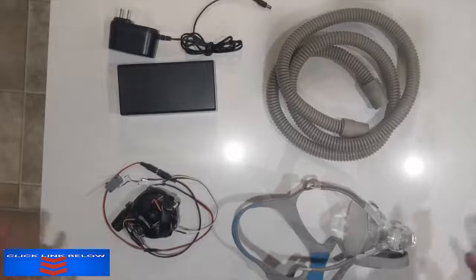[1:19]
Hi, my name is Johnny Lee, and among the many concerns around coronavirus, one of the growing concerns is around the shortage of available ventilators that might be needed in the case of an acute respiratory attack or distress. Now, there's a lot of efforts around the world trying to accelerate the production of FDA-approved ventilators, and those are definitely the best path, if possible, if those can be ramped up in production.
There's also a growing interest around what might be possible with really low-cost designs that aren't nearly as good as a professional ventilator, but might be usable or even helpful in an emergency. To help accelerate this effort, I wanted to share a design that I've been working on that might be simple and easy to build in the case that official ventilators aren't available.
I'm interested in getting feedback from medical professionals or engineers on how this might be more useful medically or easier to build. Now, I'll start off to say I'm not a medical professional, and this is not a medically certified device. So if you have professional care available to you, you should definitely seek that out over anything you might see in a YouTube video.
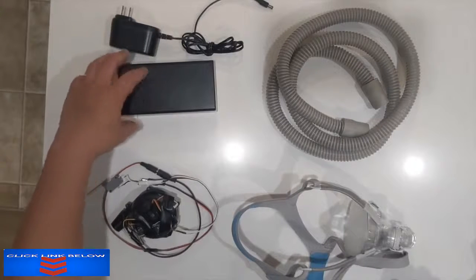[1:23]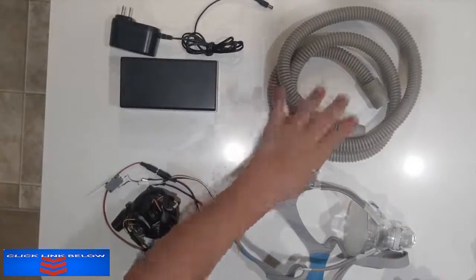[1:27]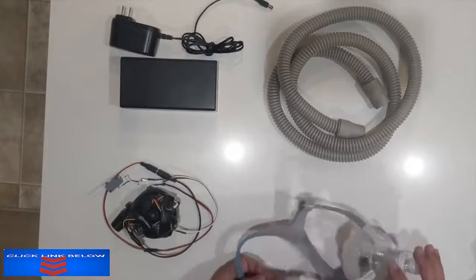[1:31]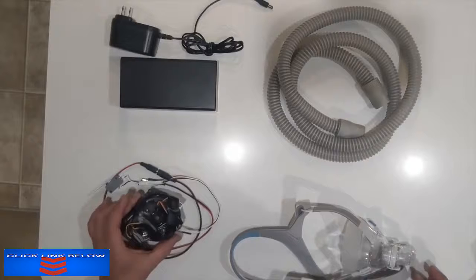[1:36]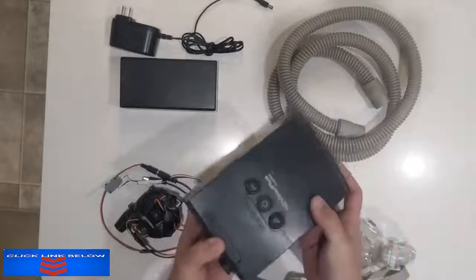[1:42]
This design is composed of four major components. We have the DC power supply. This is an optional 12-volt battery backup. This is a breathing tube. This is a face mask from a CPAP. And I'll explain what a CPAP is in just a moment. And this is the blower that causes pressure to go into your lungs. This blower is actually from the inside of an old CPAP that I had.
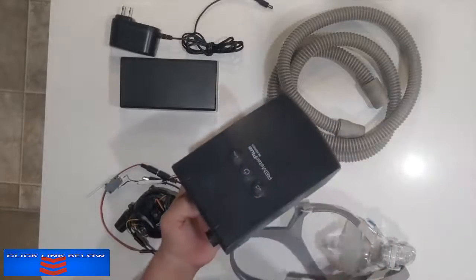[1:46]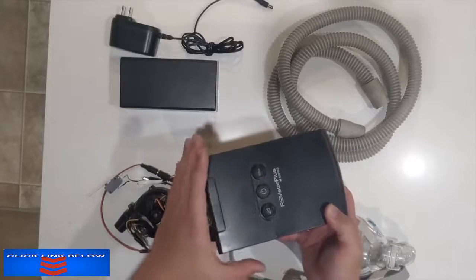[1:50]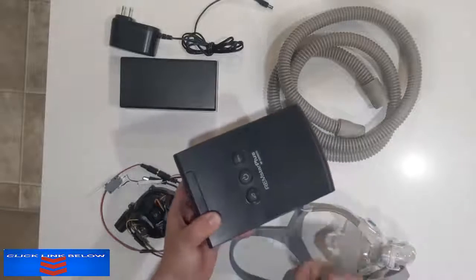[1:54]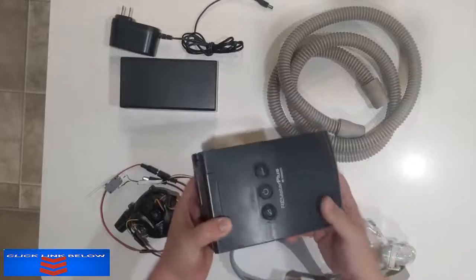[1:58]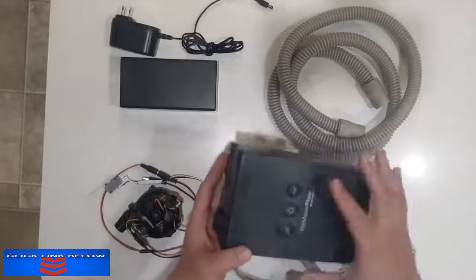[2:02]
And CPAPs are devices for people who have sleep apnea. CPAP stands for Continuous Positive Airway Pressure. And what it does is it blows air into your lungs so you don't accidentally stop breathing while you're asleep. I have a few of these old ones because I was really interested in what was inside of them.
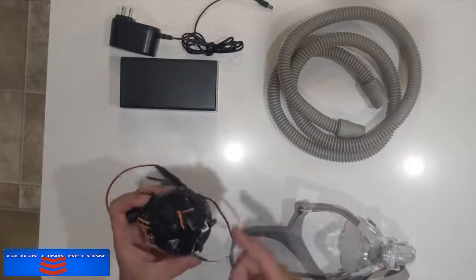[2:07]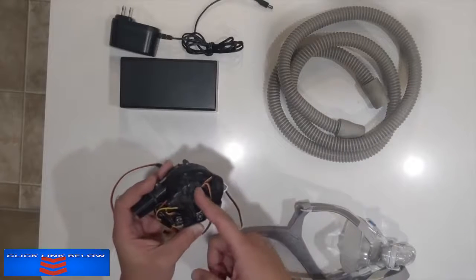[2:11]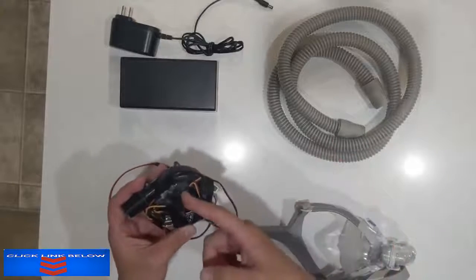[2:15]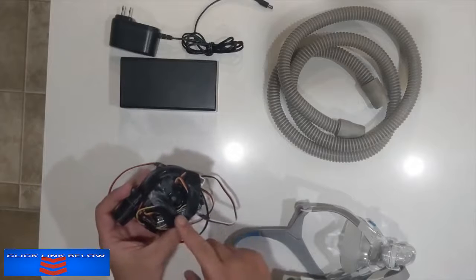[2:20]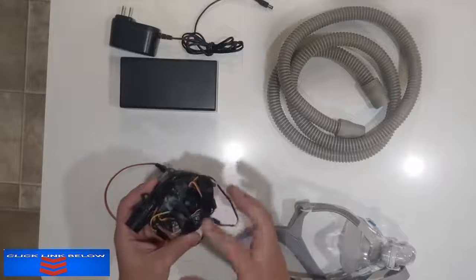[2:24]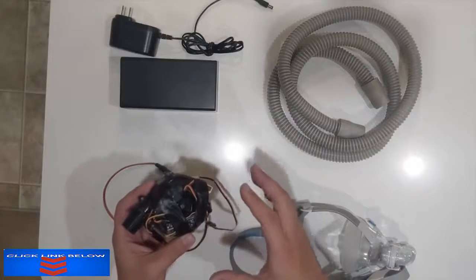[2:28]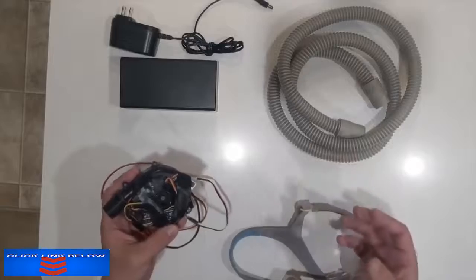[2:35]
And it turns out that the blower is simply a standard brushless DC motor, which can be driven by a standard electronic speed controller found in quadcopters or even RC cars. And it can be driven by an Arduino. And the nice thing about having this control is that now I can modify the software to change the speed of the blower to meet whatever profile I want. And this is what enables the CPAP motor to function as a partially capable simplified ventilator.
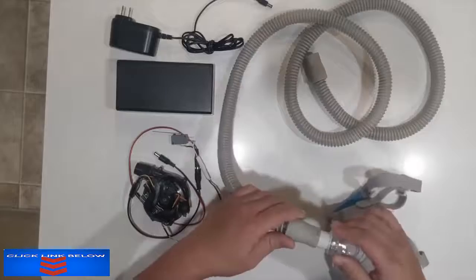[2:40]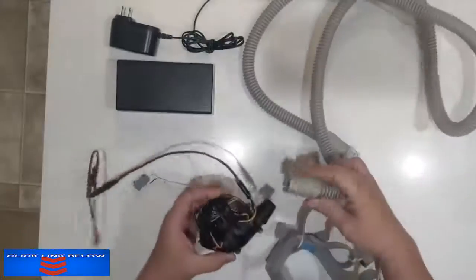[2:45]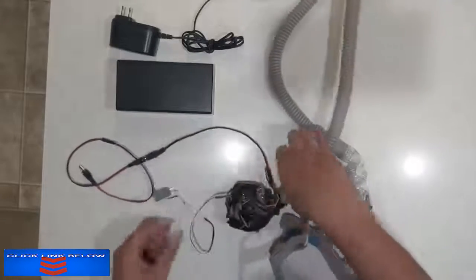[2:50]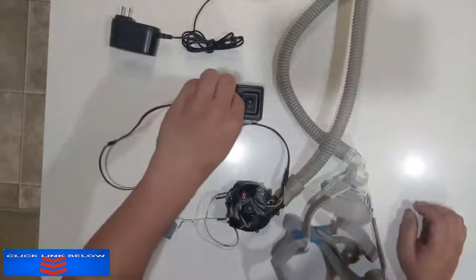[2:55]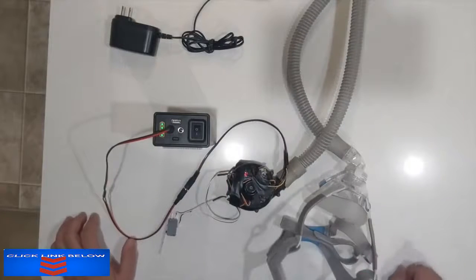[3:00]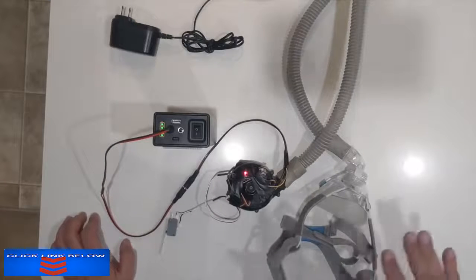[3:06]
Now, to put it together is pretty simple. I just take one end of the breathing tube into the face mask, the other end of the breathing tube into the blower that has this tapered end, which has been 3D printed on it to make the blower fit. And then I take the DC jack and turn on the battery and plug it in. You'll hear the motor go through an initialization sequence, and it starts off in a low pressure level CPAP mode. So it's blowing continuously right now with the air pressure, and this will push air into your lungs.
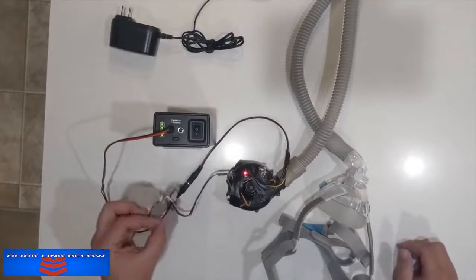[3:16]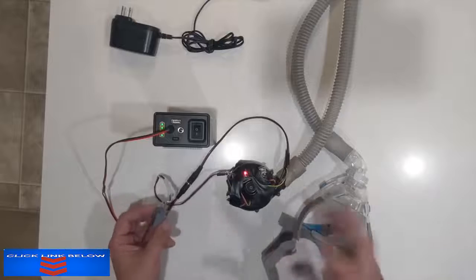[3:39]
And I have this toggle switch in here, which you push once to change the speed. And there's five levels of speed. And then it goes back to the normal level. If you double click it, it now goes into a BiPAP, where there's two different levels that the motor is oscillating back and forth between.
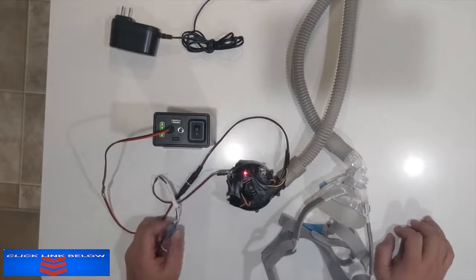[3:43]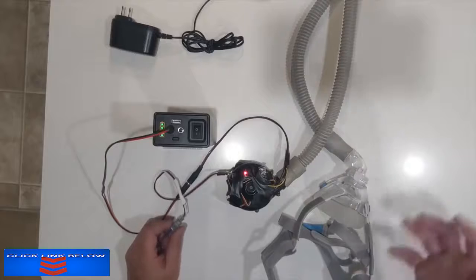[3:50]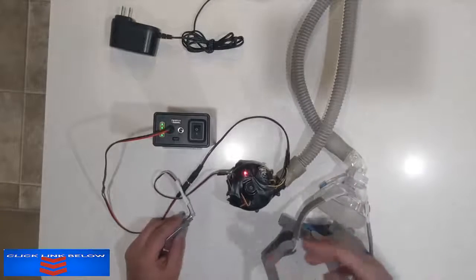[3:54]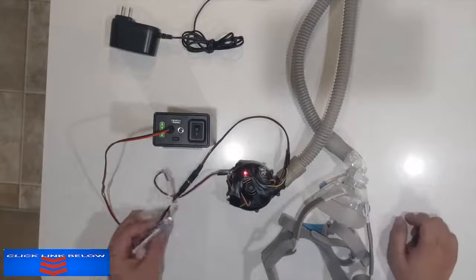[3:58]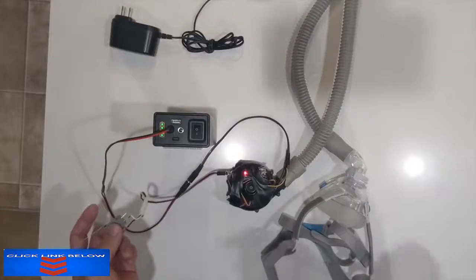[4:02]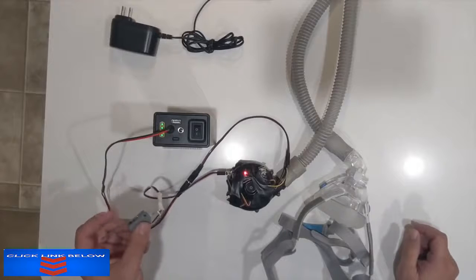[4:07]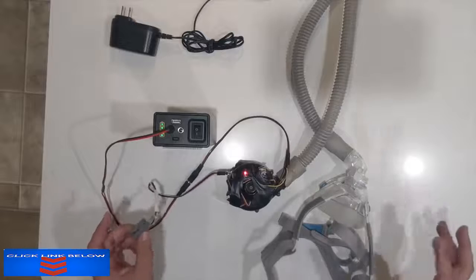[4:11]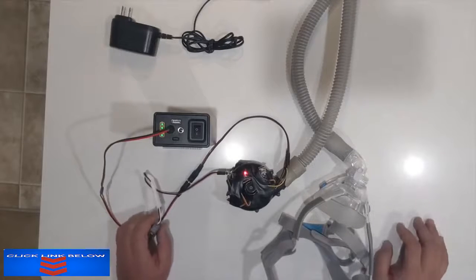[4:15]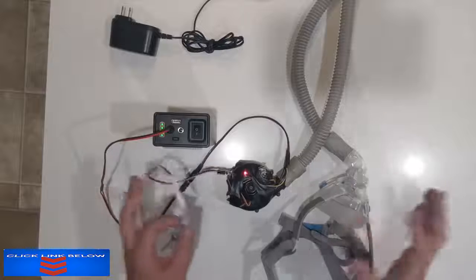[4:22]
It's currently programmed at 16 cycles per minute, which is kind of an average breathing rate. And this, if you put the mask on, will actually force air into your lungs at this level. And we can change this speed with software. If you single click again, it will actually cycle up and down between faster speeds, up to a maximum speed that is approximately equal to 20 centimeters of water of pressure. Again, that pressure is programmable, so this profile and this speed can be completely changed with a simple Arduino IDE.
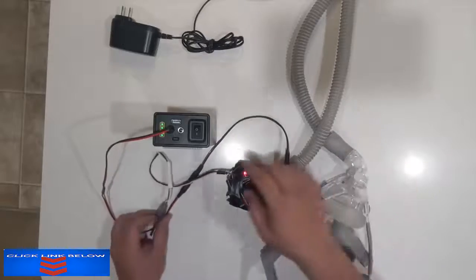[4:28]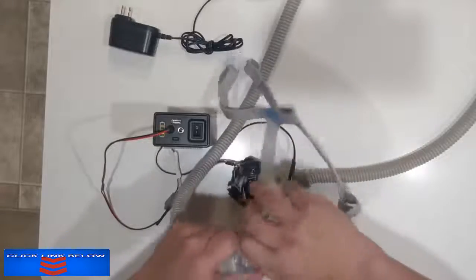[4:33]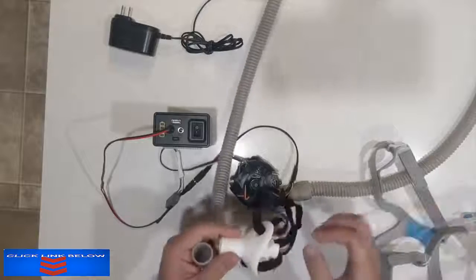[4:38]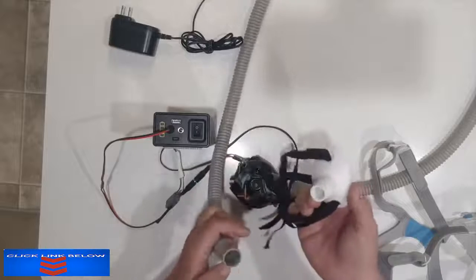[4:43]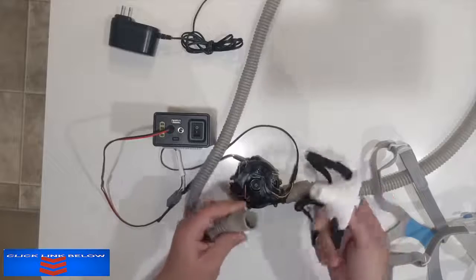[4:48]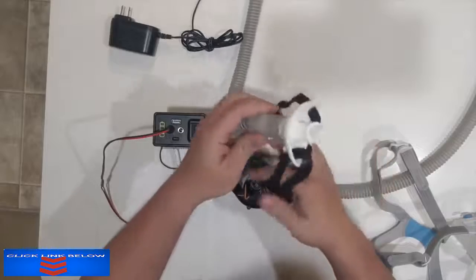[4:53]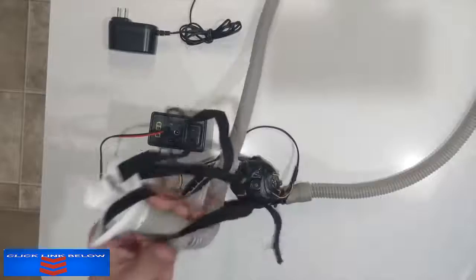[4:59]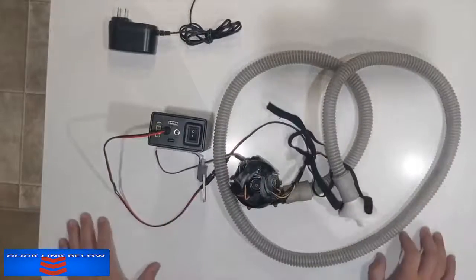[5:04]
I'll turn this off. If you don't happen to have this mask because you don't have a CPAP, you can use this sort of 3D printed mouthpiece. This is kind of modeled after an intubation adapter or mouth guard, but we're not intubating people, but this will actually go into the tube, and you can strap this onto the head with just simple elastic straps. And as a result, this is a pretty minimal solution that might be useful in an emergency.
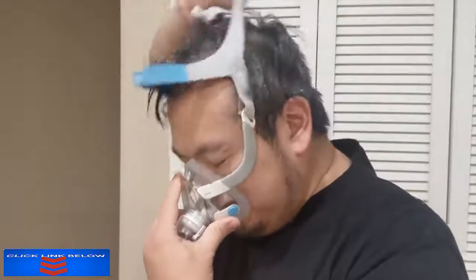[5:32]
I'd like to quickly show you how the different headgear works, just to give you some ideas and also to show you how it goes together. The first one is the CPAP mask that I have. This is from a company called ResMed, and this is the AirFit F20. The nice thing about this mask is that it covers both the mouth and the nose. So as the air pressure comes in, it covers the entire airway, forcing the air into your lungs. You just put it on in front, bring this over the back, and these magnetic clips hold on the side, like this.
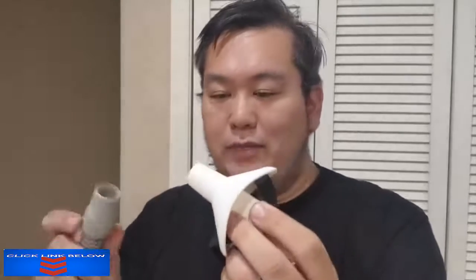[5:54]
This one is an alternative to a face mask if you don't happen to have one, but it's a 3D printed adapter that's kind of modeled after an intubation tube, an intubation mouth guard. This slips onto the tube just like this, and it has elastic straps just like a standard face mask. The bad thing about this is that it doesn't cover the nose, and so there's potential for leakage unless you use something like tape to cover it up.
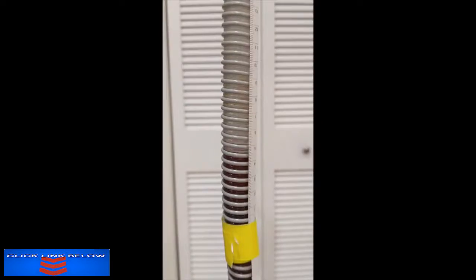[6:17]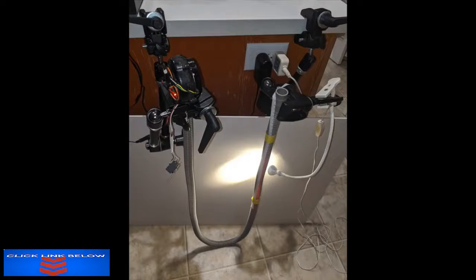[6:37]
I've also done some basic testing of pressure that's possible with this blower, and this shows the blower oscillating between about 10 centimeters of water and 20 centimeters of water at a rate of 16 cycles per minute. This is a picture of the basic test fixture for measuring the output pressure achieved by the blower. The U-shaped tube is filled with liquid, and the blower is blowing into the top of one end of the U and measuring the distance that the liquid on the other end of the tube is being pushed up. This gives me a conversion of air pressure into centimeters of water, which is what's commonly used in respiratory devices.
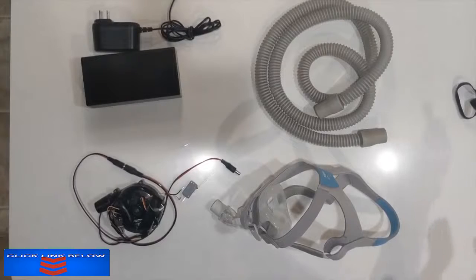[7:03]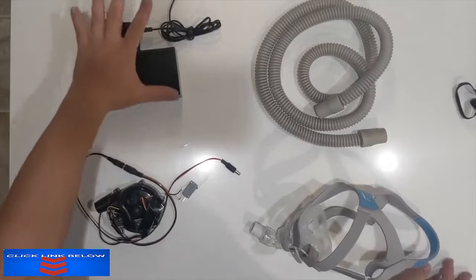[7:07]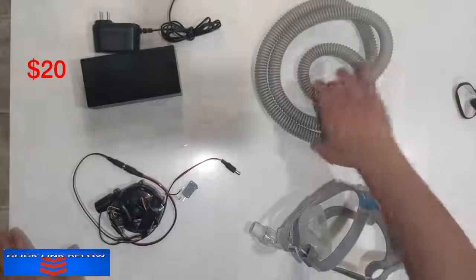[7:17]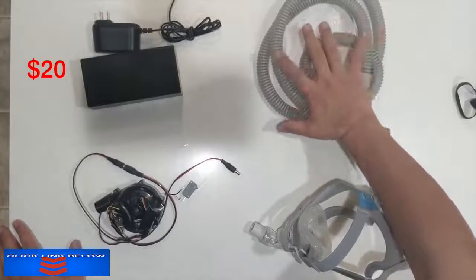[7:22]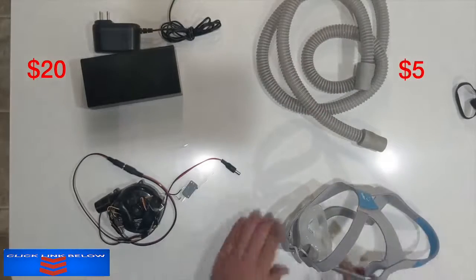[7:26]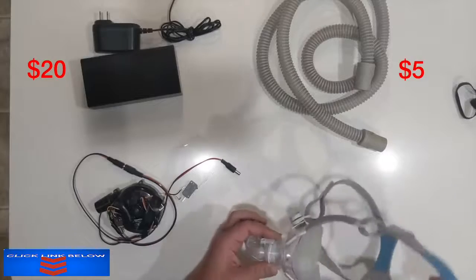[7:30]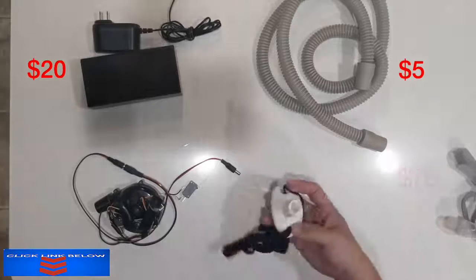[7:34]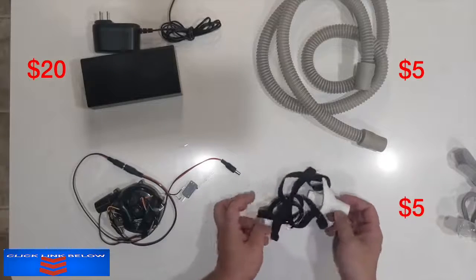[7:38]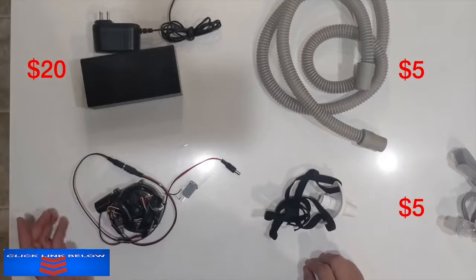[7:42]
Now, in terms of overall cost, the system can be pretty cheap. I used a fancy battery pack here, but if you just replace this with a high enough power 12 volt 5 amp power supply, that can be gotten for about $20. This is tubing from a CPAP, but could be replaced with standard tubing from a hardware store for the cost of about $5. This face mask is pretty fancy and is for a CPAP, so it costs about $75 new. But this 3D printed mouth guard with elastic straps is just a few dollars worth of parts. And the blower plus the Arduino and the electronic speed controller is probably available in volume for about $30 or used if you can find it on eBay.
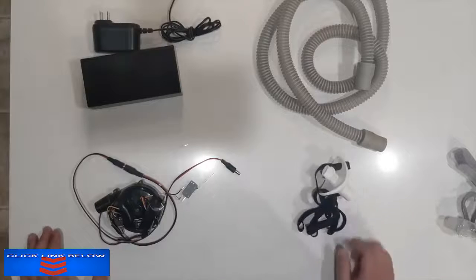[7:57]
As I mentioned in the beginning of this video, the main reason I'm sharing this isn't to say that this is perfect and it's done, but really to accelerate ideas and get feedback and learn from you about how to make this better and how to make this more effective. And hopefully it becomes useful in a time when proper ventilators might become extremely rare.
So if you're a medical professional or you're an engineer that has suggestions, please contact me. Also check out the GitHub link for much, much more detail and technical information about how this was built and the measurements that I took.